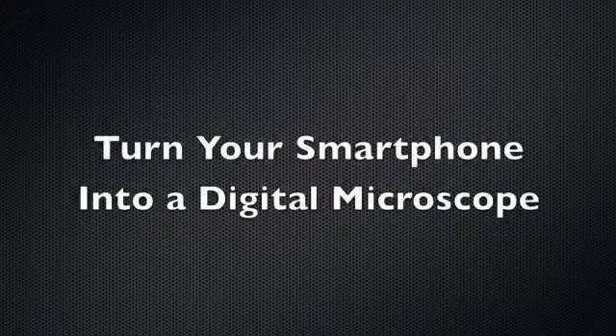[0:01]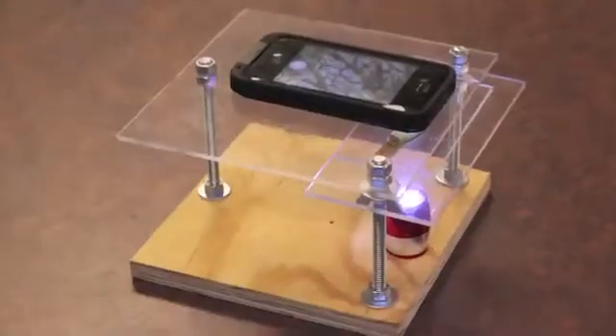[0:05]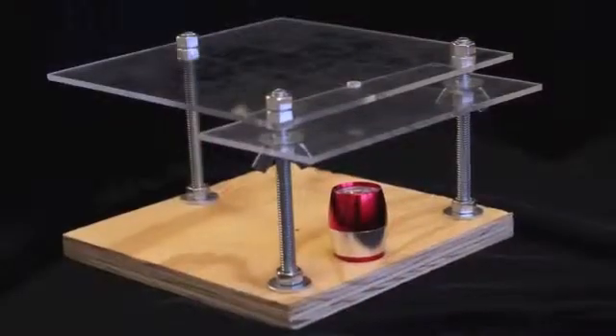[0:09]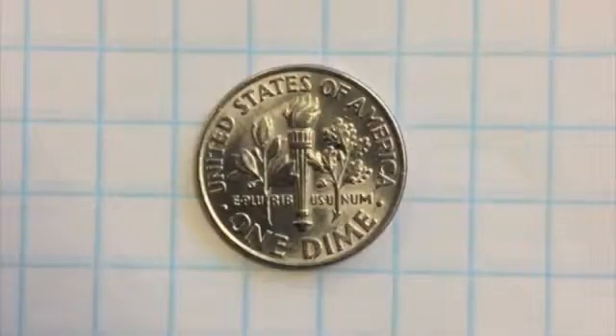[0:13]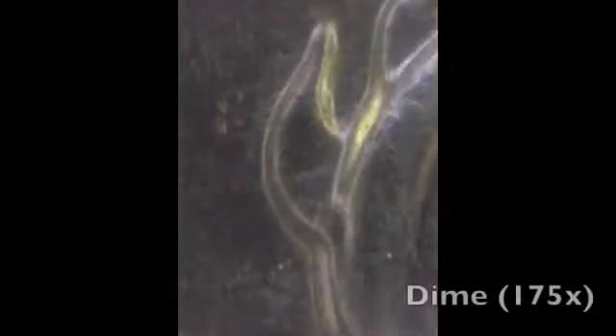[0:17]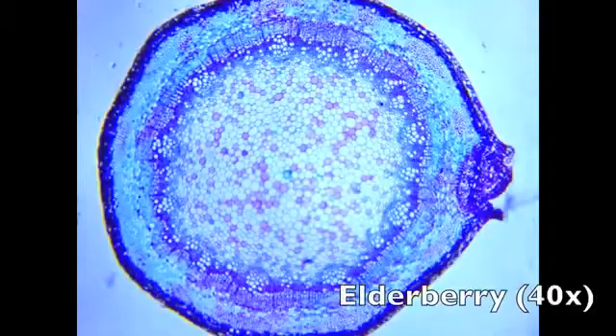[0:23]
Today, I'm going to show you how to turn your smartphone into a digital microscope. All you need is a smartphone, a few tools, the focus lens from a cheap laser pointer, and about $10 worth of materials from the hardware store. Not only will this homemade microscope stand allow you to take high-quality macro photos, but with the ability to magnify objects up to 175 times, you can see cells in photographs.
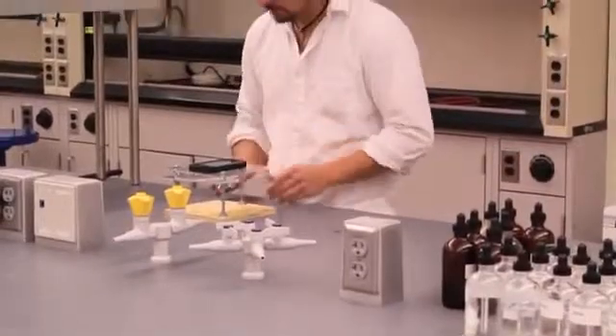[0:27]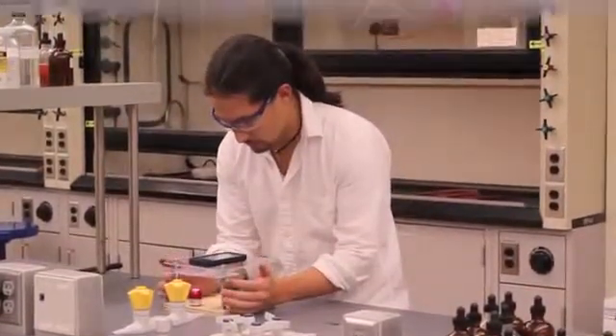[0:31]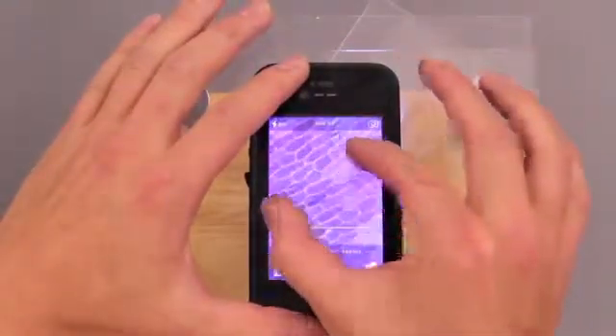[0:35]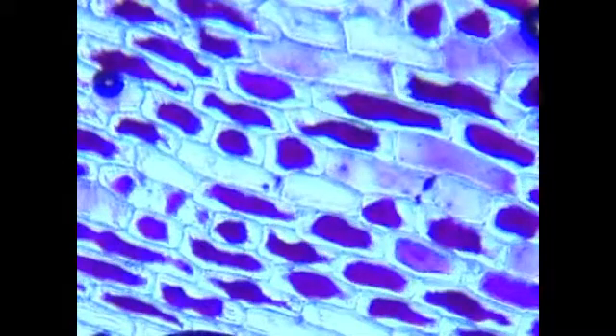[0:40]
At these levels of magnification, plant cells are easy to see. This rig can even be used for rudimentary laboratory experiments. We were able to observe plasmolysis in red onion epithelial cells. As you can see in these time-lapse photos taken with an iPhone, the cytoplasm pulls away from the cell wall when exposed to a saline solution.
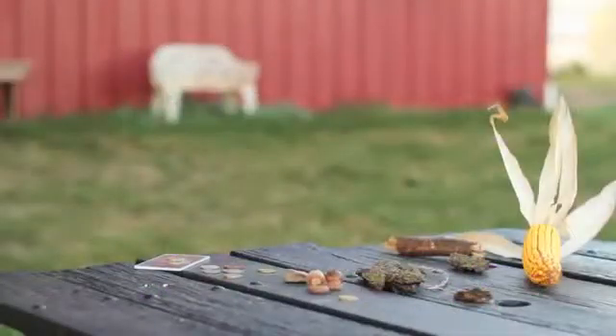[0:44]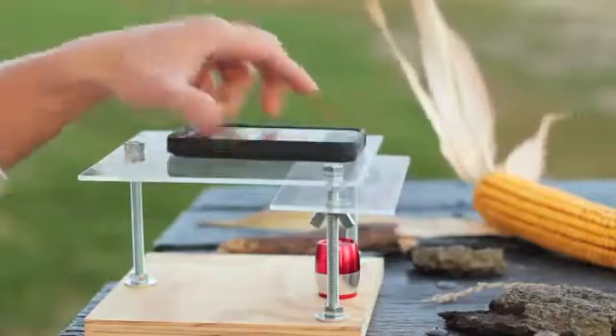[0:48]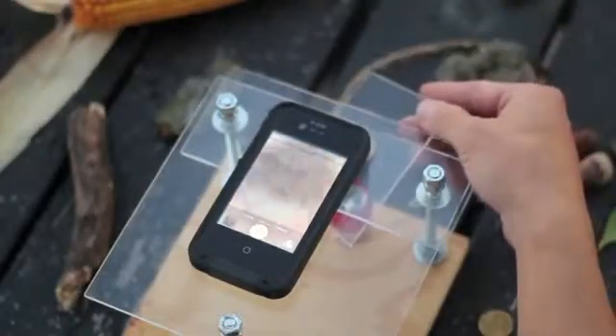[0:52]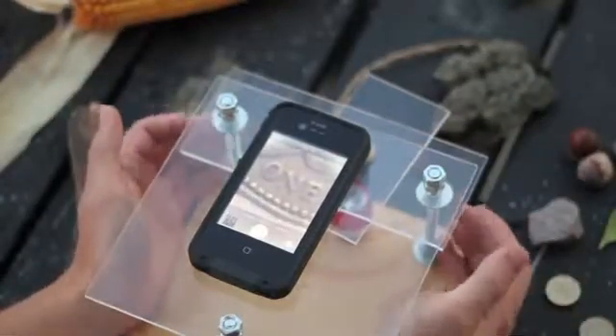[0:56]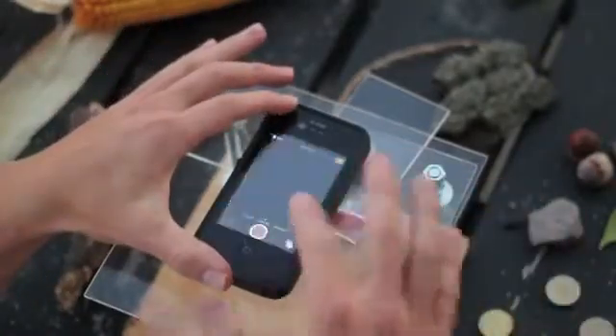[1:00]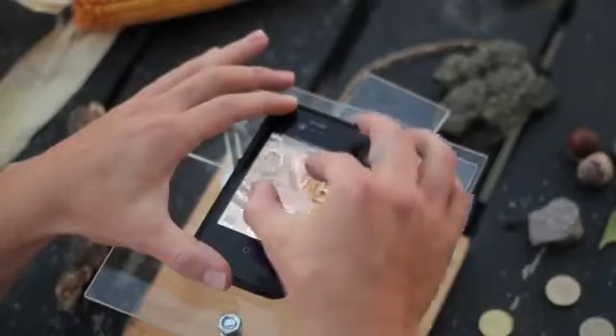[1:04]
You're not restricted to a laboratory setting with this microscope. It was designed to be easy to operate, lightweight, and portable. All you need to do is align your smartphone's camera with the focus lens on the top of the stage. Place the object you'd like to view on the adjustable specimen stage. From here, bring the object into focus by slowly turning the wing nuts on either side. Once it's in focus, you can take a picture, or video, or even zoom in for a closer look.
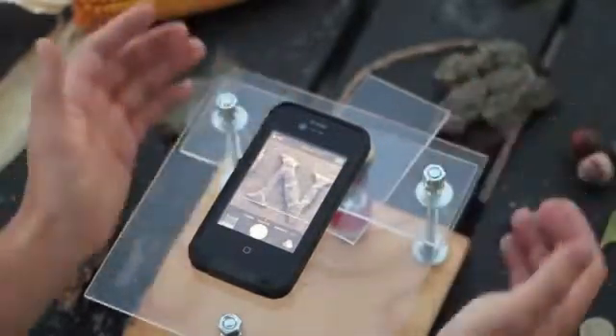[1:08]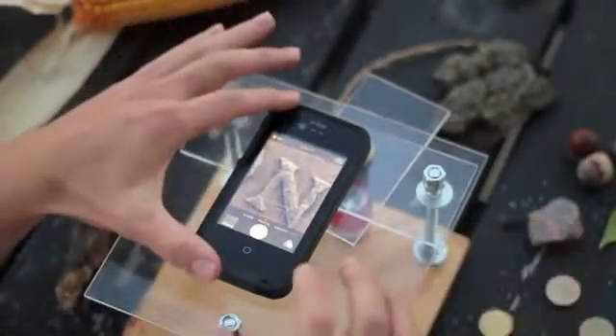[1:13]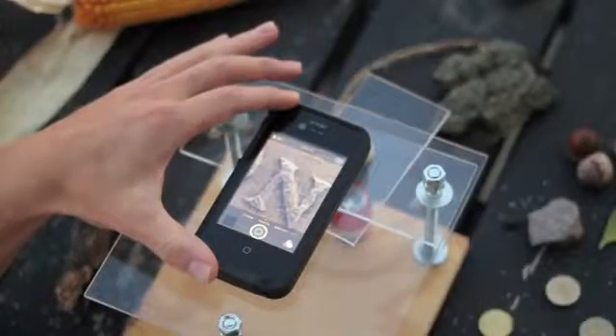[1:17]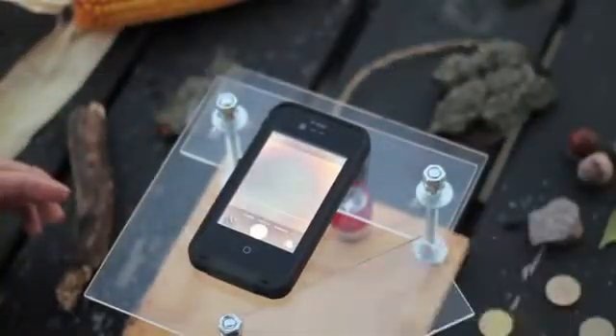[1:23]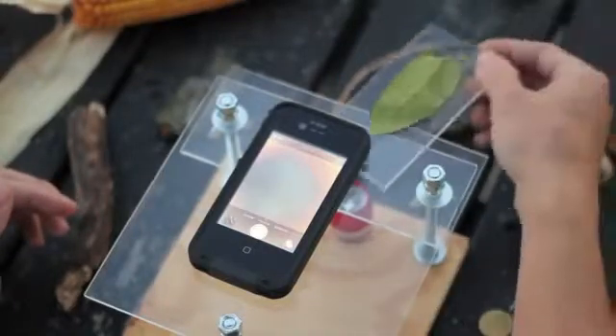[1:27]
Switching samples can be made easier with the use of a small plexiglass slide. Because the stages are also constructed with plexiglass, objects can easily be viewed without the use of an external light source. This allows the microscope to be used in a wide range of settings. Whether it's in the classroom, outside, or in your own home, this simple setup will allow you to take a closer look at the world around you.
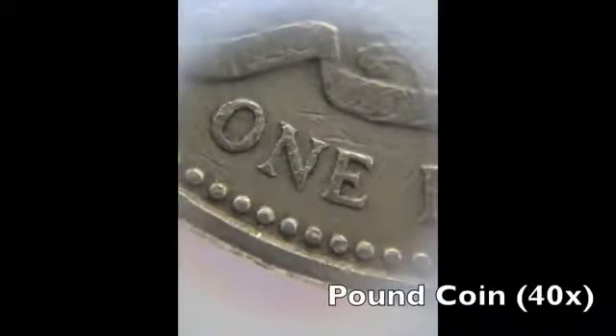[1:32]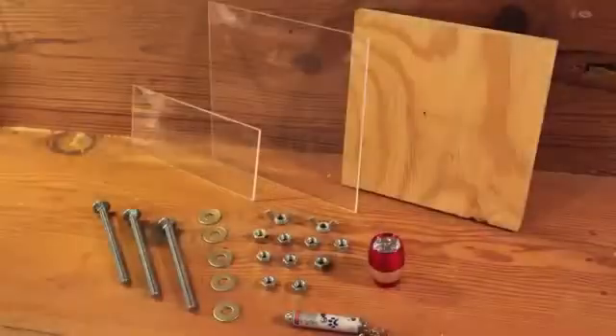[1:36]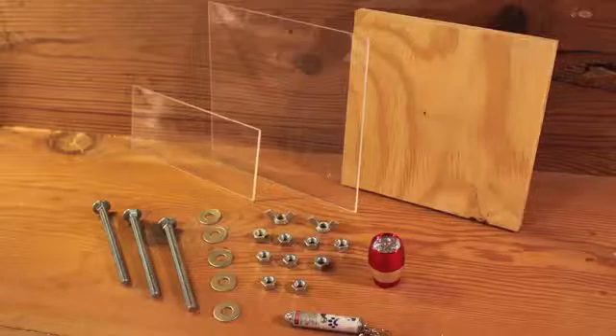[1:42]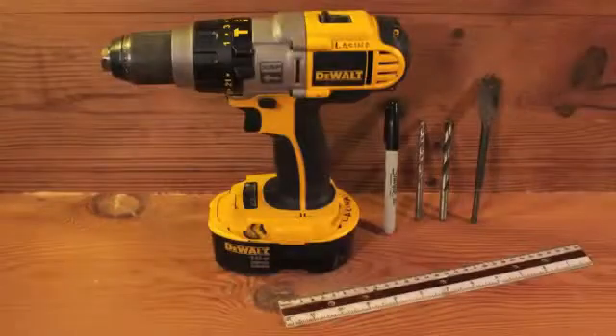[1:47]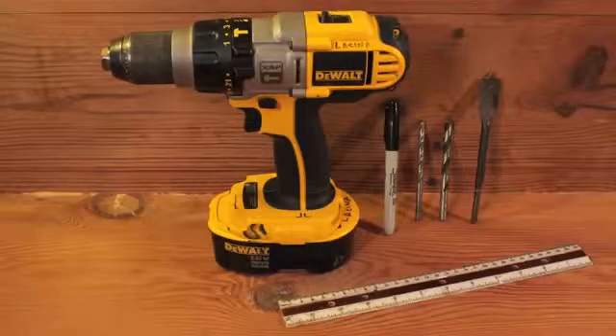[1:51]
It only takes about $10 worth of materials and 20 minutes of your time to build this microscope stand. You will need a cheap laser pointer, some 1/8-inch plexiglass, plywood, a few nuts, bolts, and washers. A small LED light is also useful for backlighting cell samples. The only tools you will need are a drill and a few assorted bits. Pliers might come in handy too.
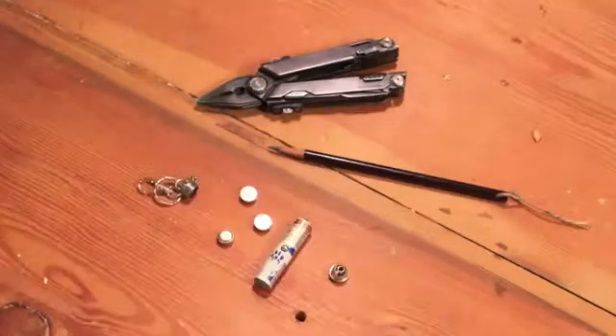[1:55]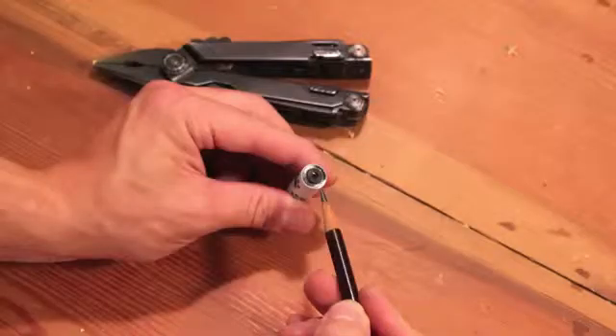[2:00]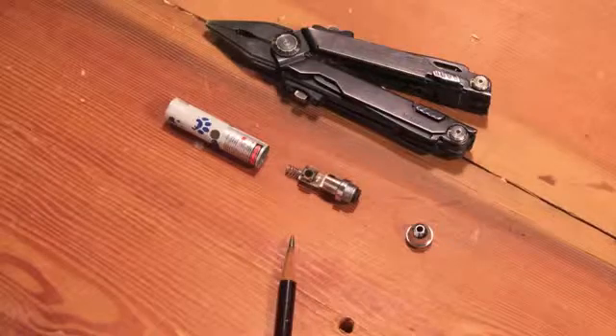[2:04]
First, you will need to remove the focus lens from the laser pointer. Start by unscrewing the housing and removing the batteries. The focus lens is right behind the nose cone. Using the back end of a pencil, push the inner assembly out of the front of the housing. Unscrewing the plastic clamp on the front of this assembly should free the lens.
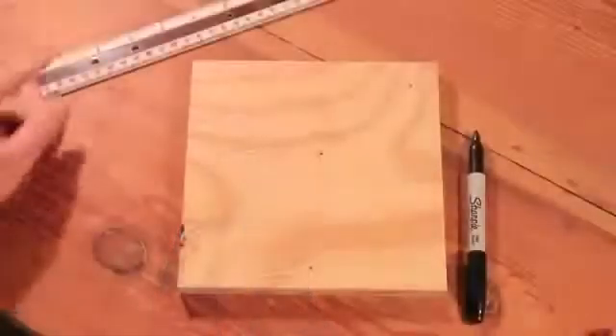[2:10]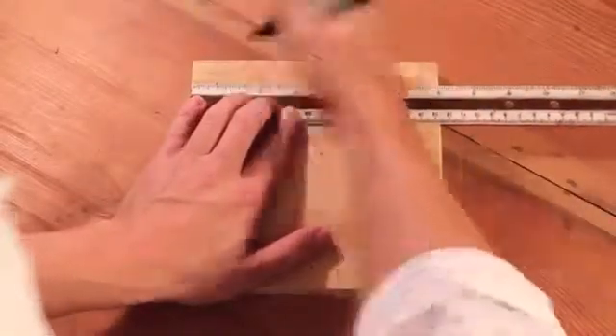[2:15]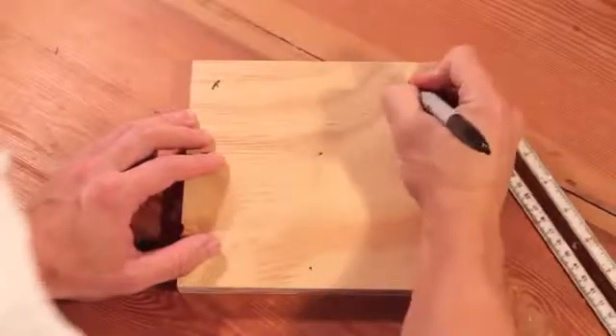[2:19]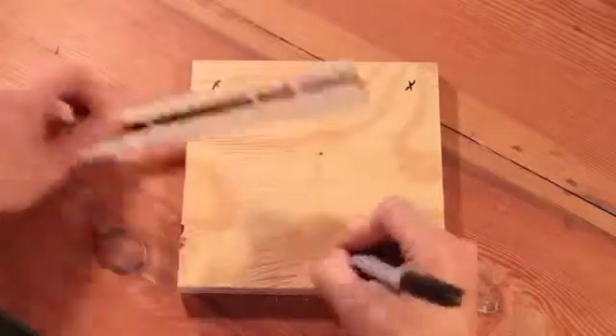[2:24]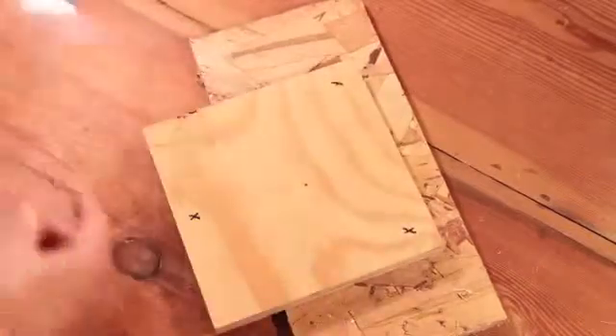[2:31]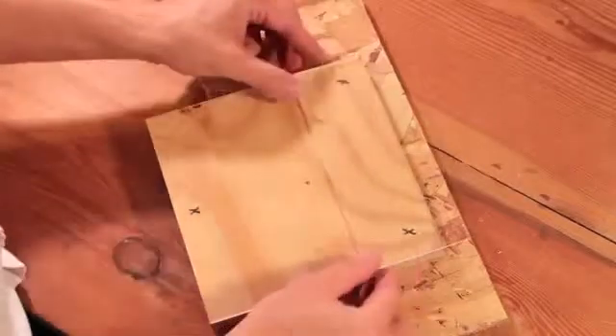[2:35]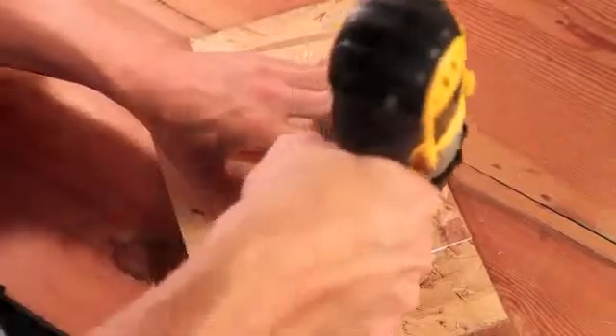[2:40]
Make a mark with a Sharpie on the front two corners of the plywood base, 3/4 inch from both sides and the front edges. Make another mark, centered on the board 3/4 inch from the bottom. Stack the plexiglass camera stage on top of the plywood. Be sure to line up the edges. Offset the specimen stage so that it extends 3/4 inch off the front of the base. When they're all lined up, drill through the pieces.
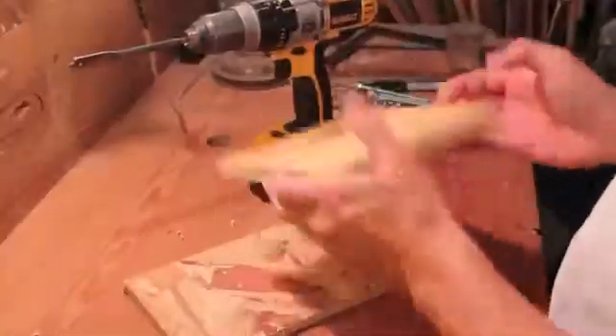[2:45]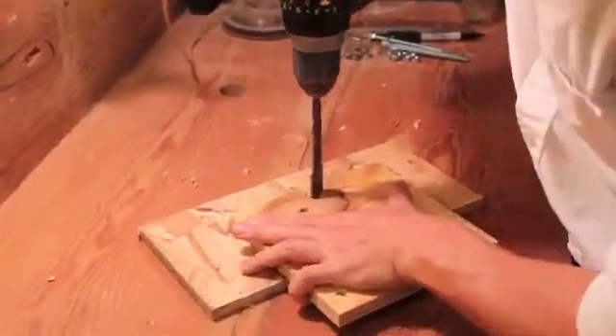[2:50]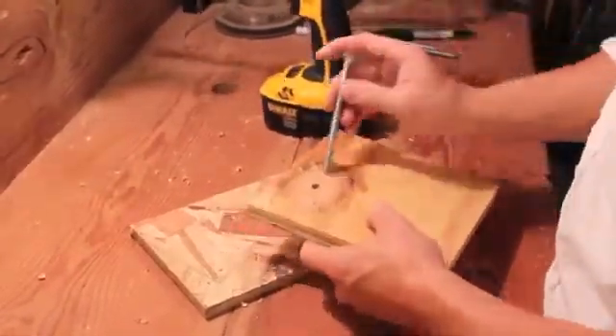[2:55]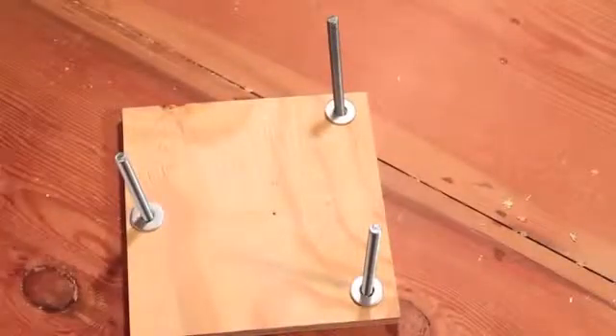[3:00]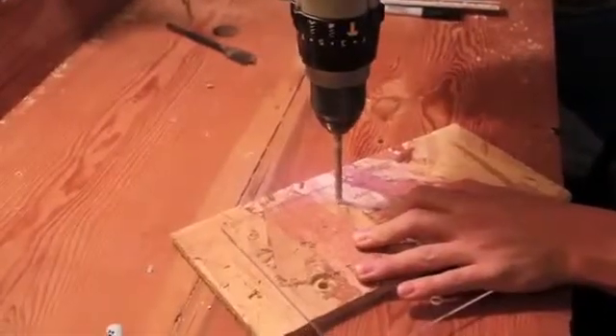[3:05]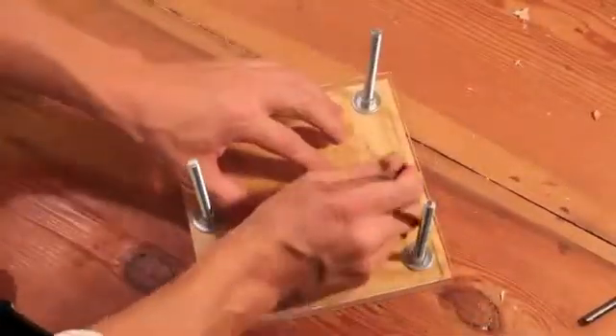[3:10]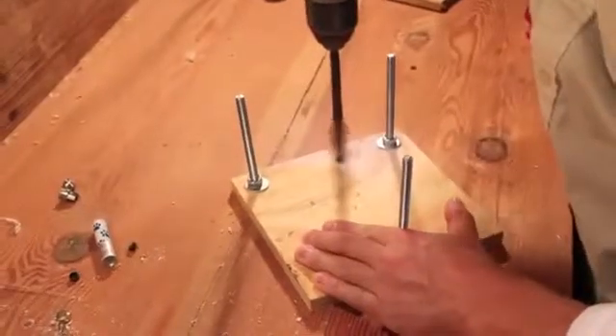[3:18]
In order for the microscope to sit flat, you will need to countersink the bolt holes underneath the base. After inserting the bolts, flip the base over and add washers and nuts to secure the bolts to the base. Next, drill a hole the same diameter as the lens, in line with the front two bolts. To make sure the LED light is centered below the lens, use the hole you just drilled to mark the position of the light. Be sure not to drill all the way through the base.
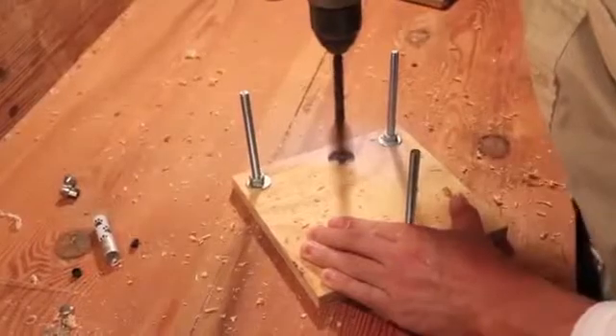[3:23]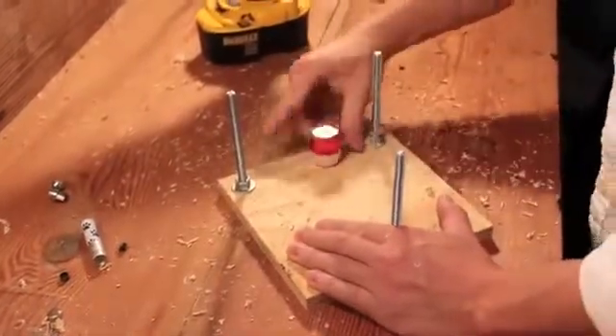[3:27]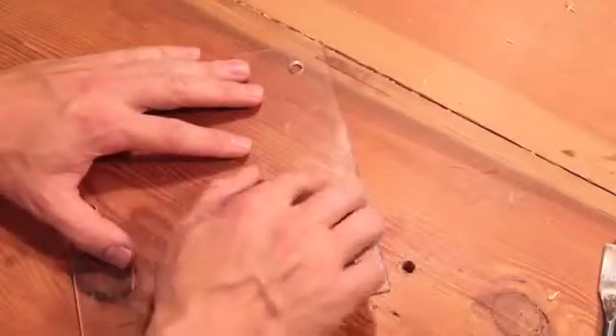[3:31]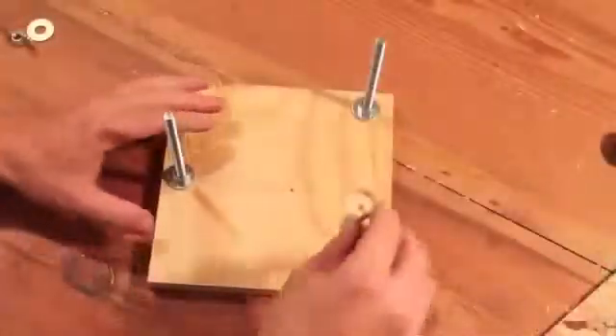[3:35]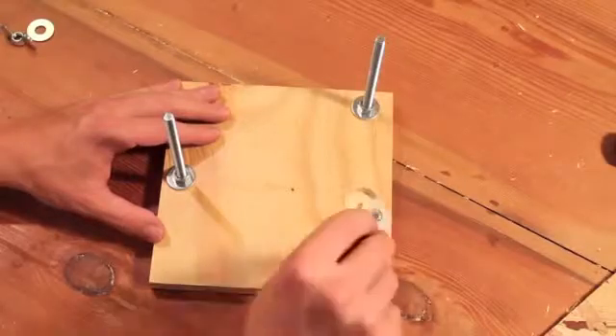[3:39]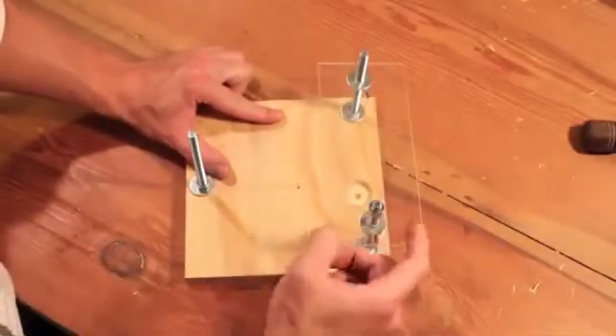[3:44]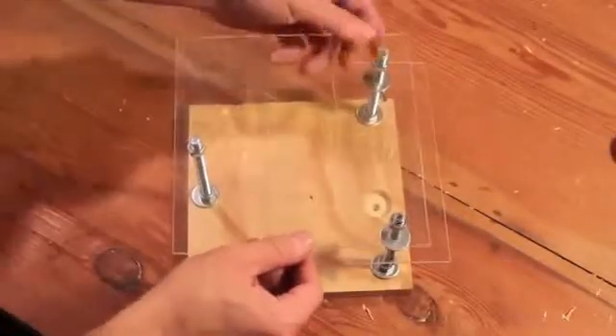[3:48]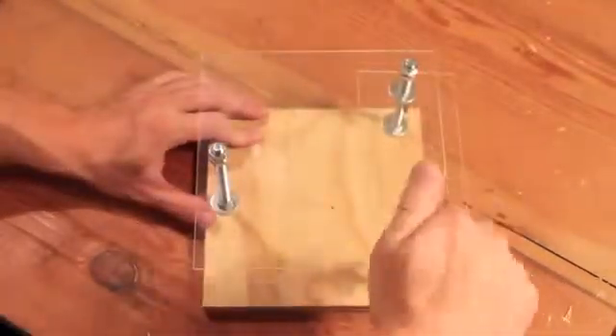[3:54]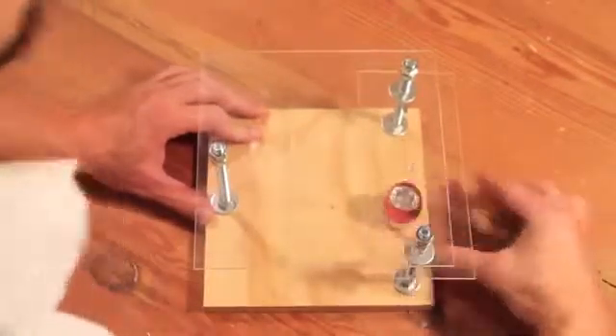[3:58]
Embed the lens in the camera stage by gently pressing it into the hole. Now you're ready to assemble. Add the wing nuts and washers to the front two bolts. Next, add the specimen stage. Add a nut to each bolt and then place the camera stage on top. Before securing the stage in place, check to make sure it's level. Tighten the final three wing nuts, add the LED light, and your microscope stand is now complete.
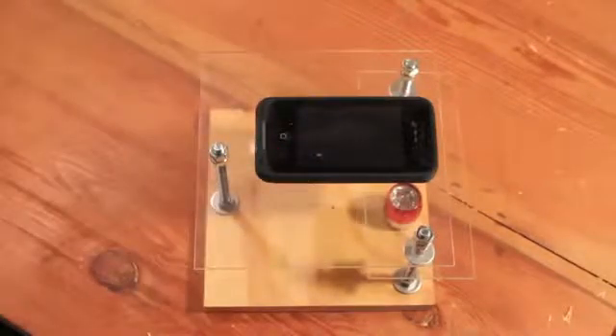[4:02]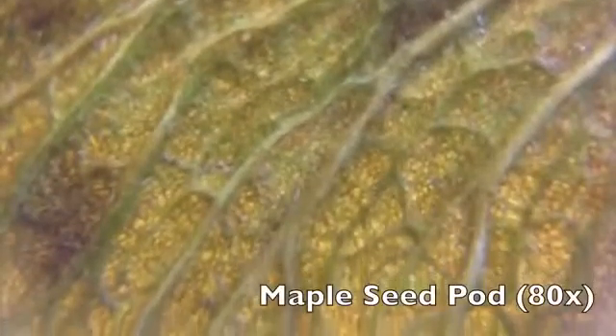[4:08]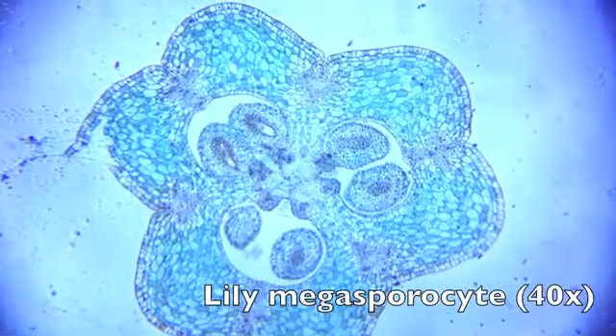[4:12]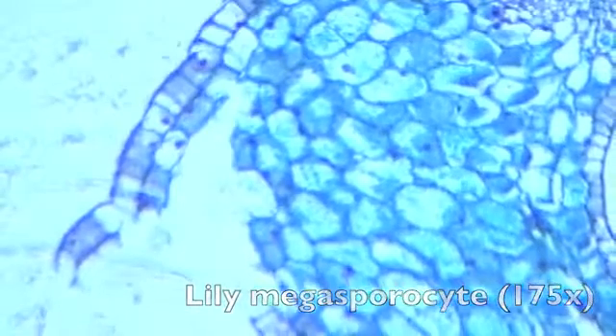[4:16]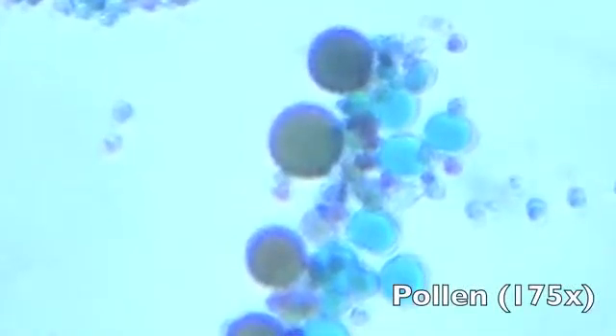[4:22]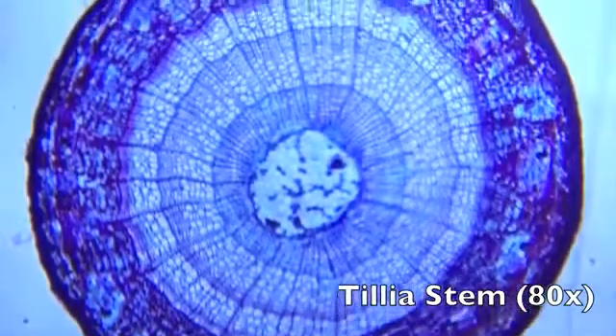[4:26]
I am a major proponent of making home science more accessible. My goal in designing and building this phone-to-microscope conversion stand is to provide an alternative to overly expensive microscopes. This setup is a viable option for underfunded science classrooms that would not otherwise be able to perform experiments requiring a microscope. But more than that, this device will allow people to rediscover the world around them.